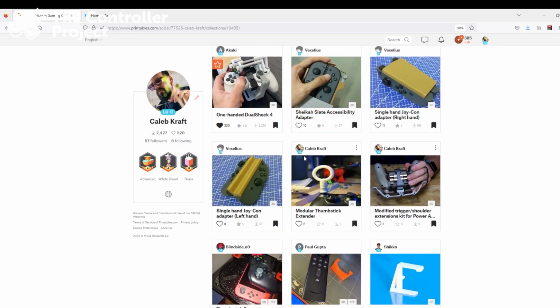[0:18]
Today we're going to be looking at 3D printed accessories for playing the Nintendo Switch with one hand. At The Controller Project, we help people with physical disabilities be able to play video games by doing 3D printed modifications to controllers.
I've got a huge library of parts, but unfortunately many of them are untested, so I'm doing this video series to test some of those parts to see if they're printable, if they work like they say, if the documentation is right, if there's any tips and tricks to putting them together, and to get the word out.
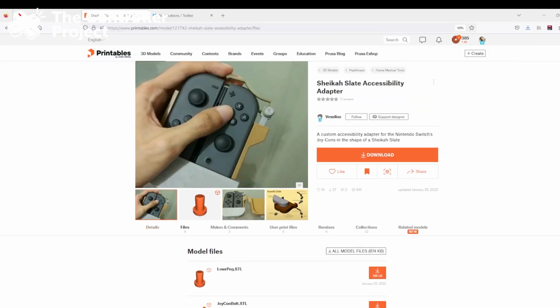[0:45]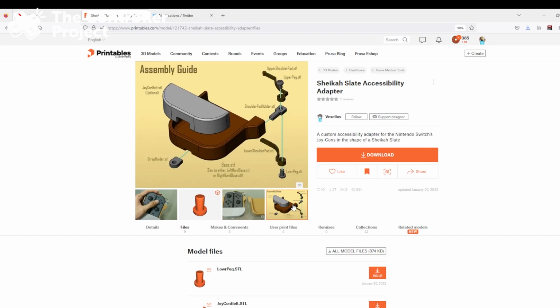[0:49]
Today we're going to be checking out the single hand gaming kits for the Nintendo Switch. It's a cool looking kit and right off the bat I've got to say, well first of all I've printed this one before, I know it works, but it looks good. It's got good documentation, there are images of it printed, so we know somebody's been able to print it. Let's get to it, let's throw it into the slicer and let's see what we think.
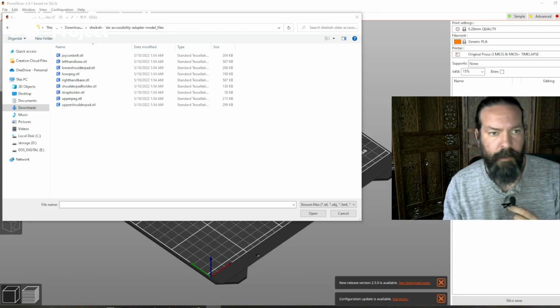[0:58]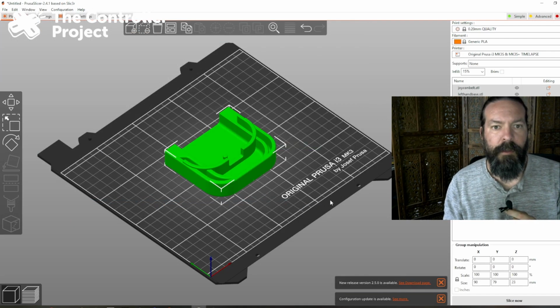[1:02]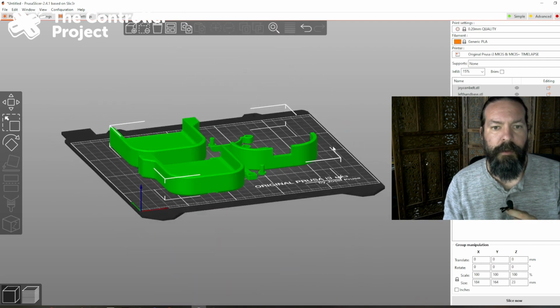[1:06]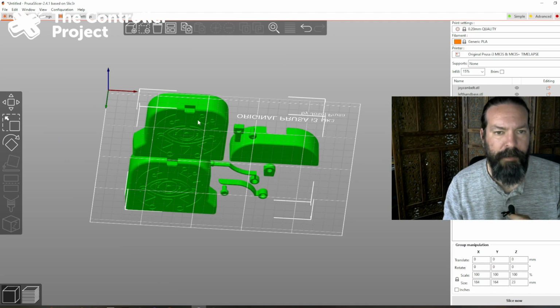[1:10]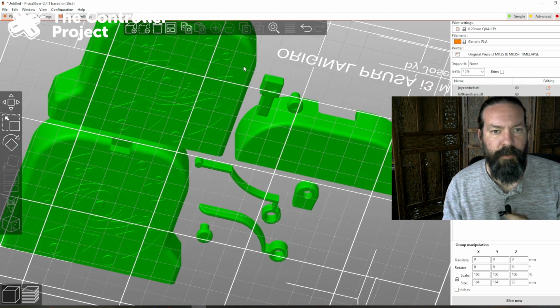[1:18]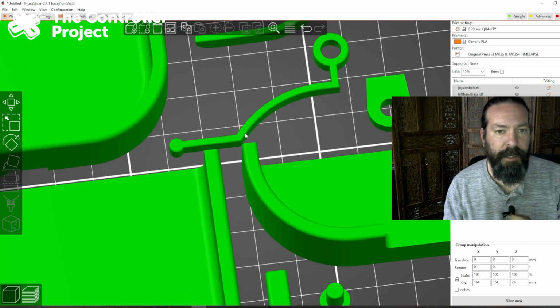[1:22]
Alright, let's pull this into Prusa's slicer, auto-arrange it. Nothing here stands out, really. Your printer might have some hard times with these little tiny bits of ornamentation here. Like if you print with a raft or something, you might lose some detail there. My printer does not have a hard time with that.
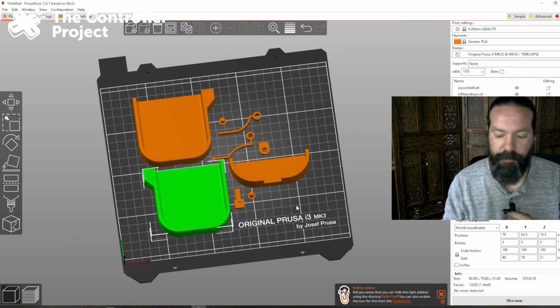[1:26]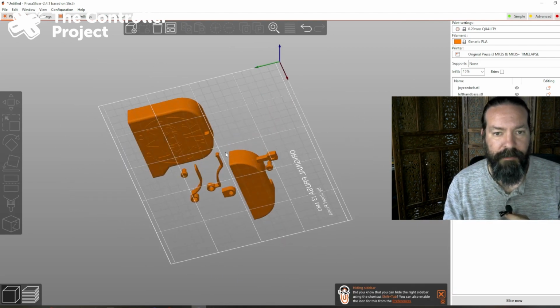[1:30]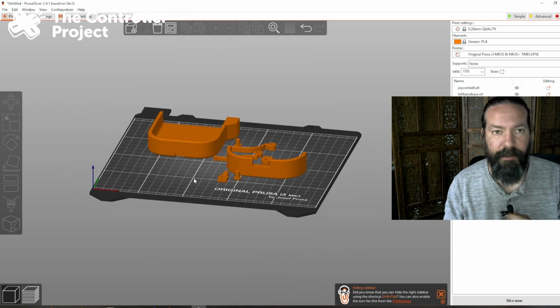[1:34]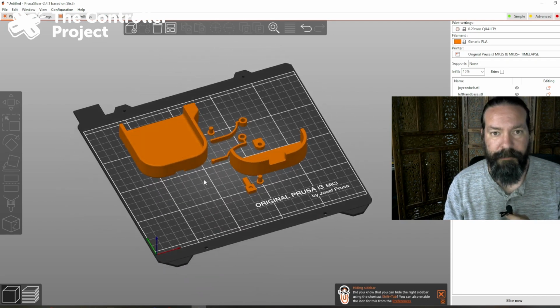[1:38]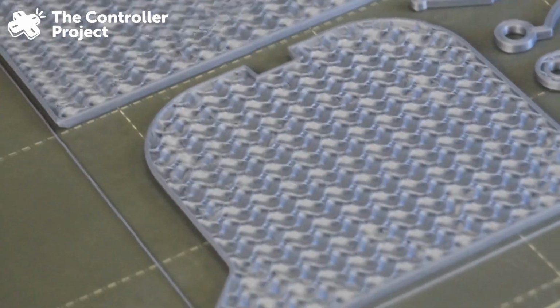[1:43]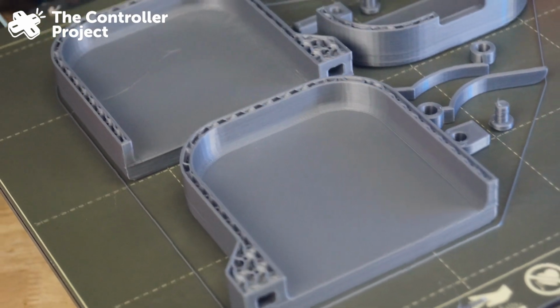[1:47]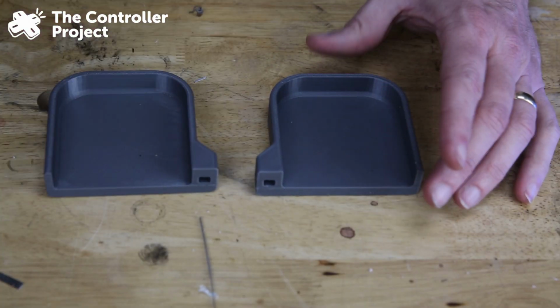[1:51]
And you only need to print whichever side you're going to use. You can delete the rest. Everything else, I mean it's already on the bed, it's already aligned properly. You can pretty much just slice this and print it. There's both the right-handed and left-handed versions.
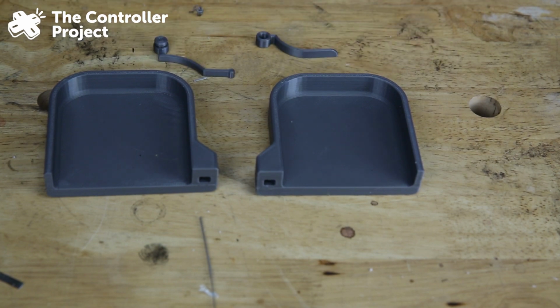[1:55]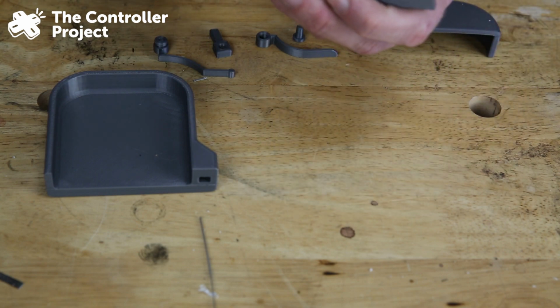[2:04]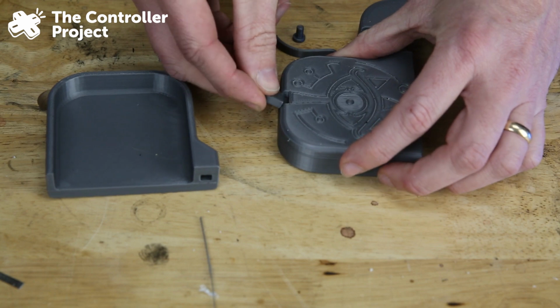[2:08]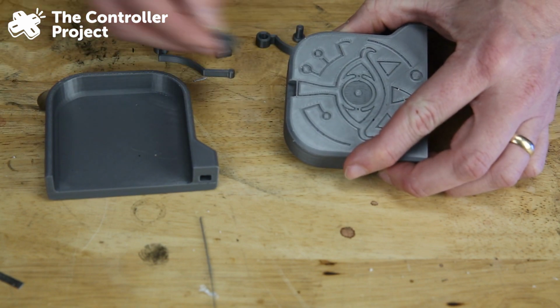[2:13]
Here are the little button pressers, this little bit, and then this cap. So this is just a lanyard holder. The lanyard holder goes in here and then you glue it in place. And so you would put that on whichever one you want. It's totally optional.
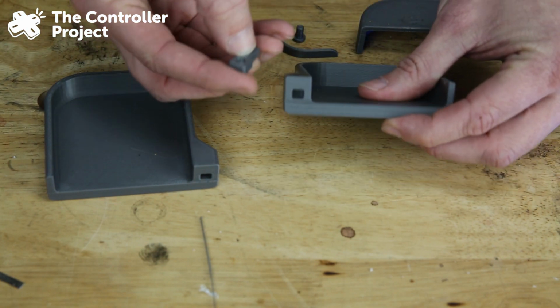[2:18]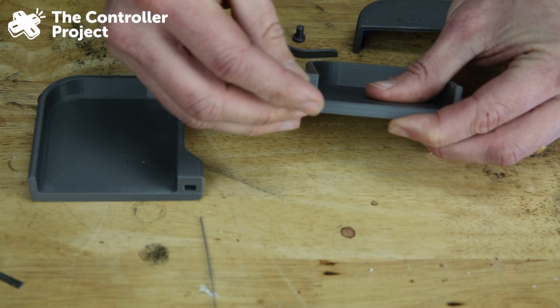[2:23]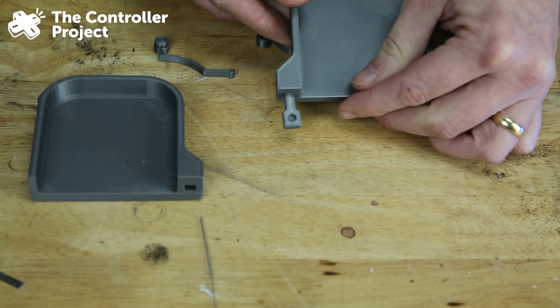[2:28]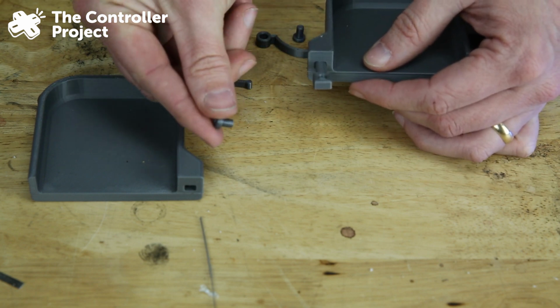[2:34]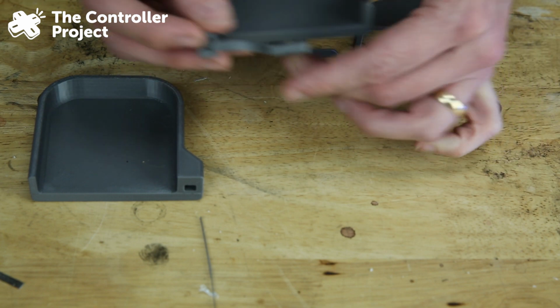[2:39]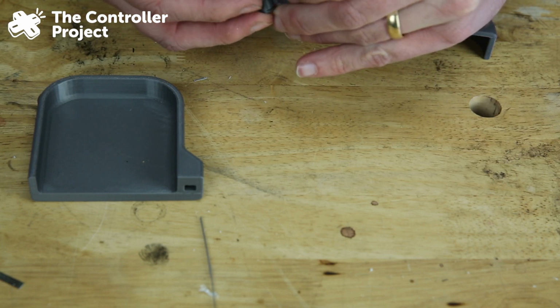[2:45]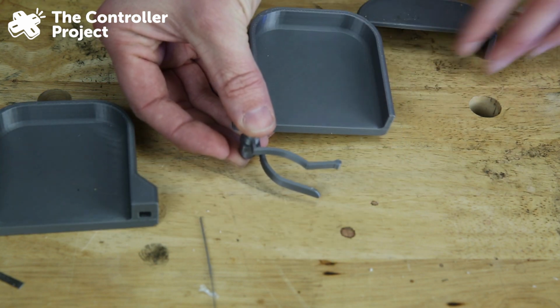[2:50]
Then the way it works is that this little piece slides in here and then it's kind of tight. I like to take a knife and scrape down the sides a bit, but you can see it goes in there. And then these little pins slide into here and you glue them in place. Like this. You place your Joy-Cons in there and then put this piece over it to hold it all in place.
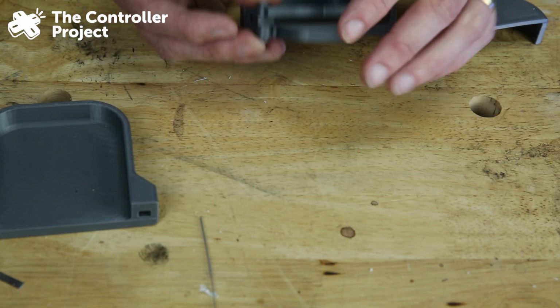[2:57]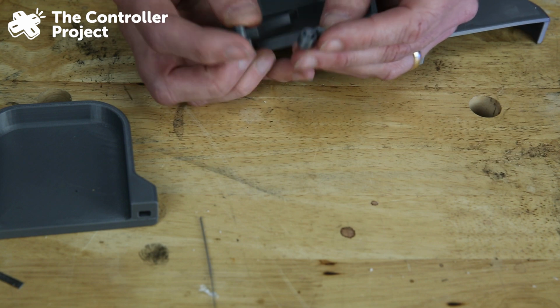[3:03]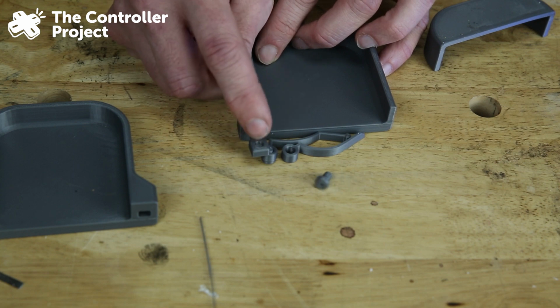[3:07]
This does work technically, however there is a weak point here. These pins, when glued in place, they're just not great. I don't like to glue them in place. So what I actually like to do is drill through this and put a little bolt through there. Let me show you how that works.
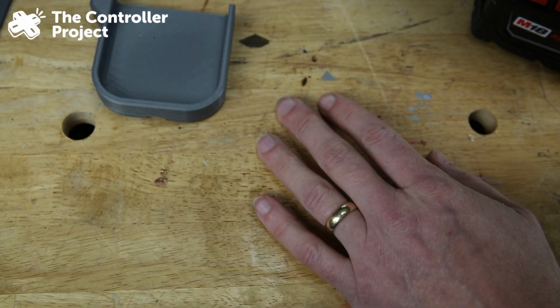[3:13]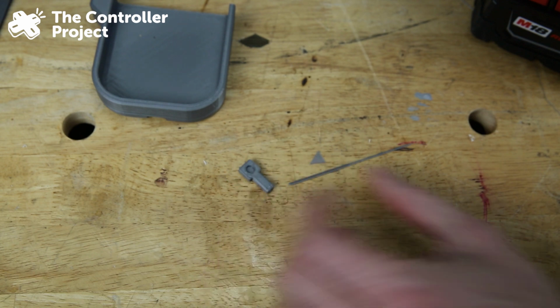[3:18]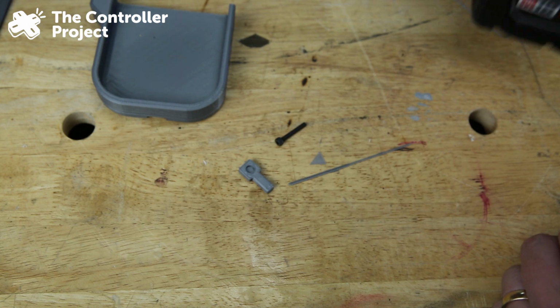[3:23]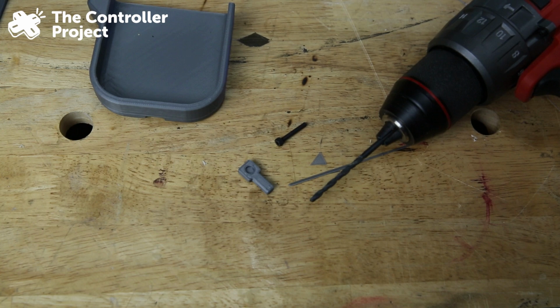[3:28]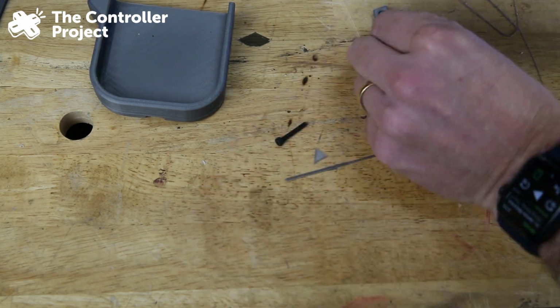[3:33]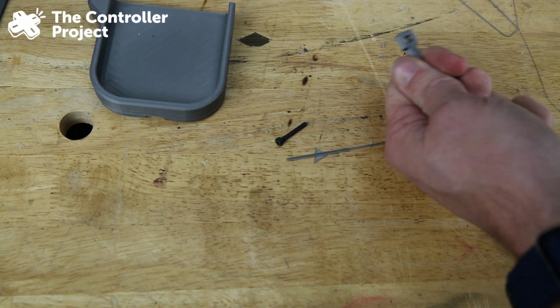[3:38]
Okay, so this is the part that we're working with here. And I'm going to use this bolt through it. So, I've got a drill bit that is the proper size for this. And we'll just drill right through it. Then once you have that through, then you can feed your bolt through. I'm going to use some washers so that it doesn't catch on things.
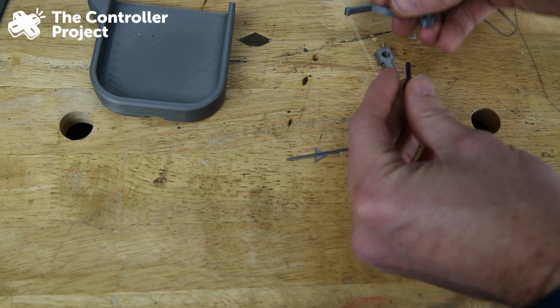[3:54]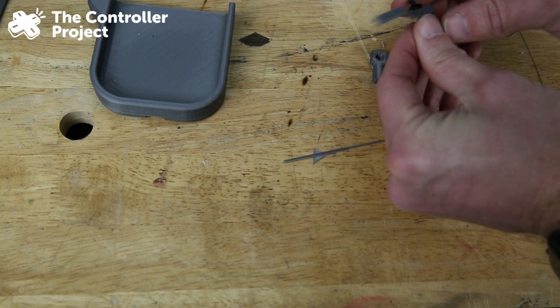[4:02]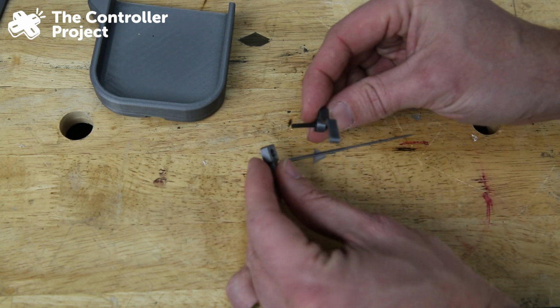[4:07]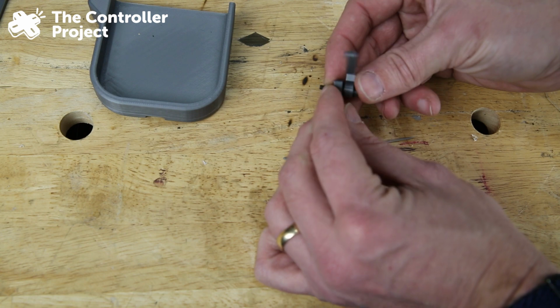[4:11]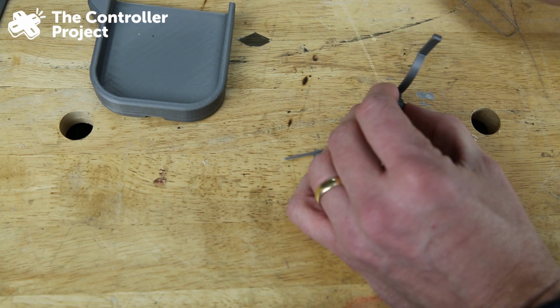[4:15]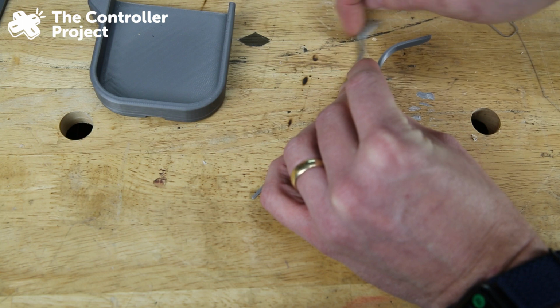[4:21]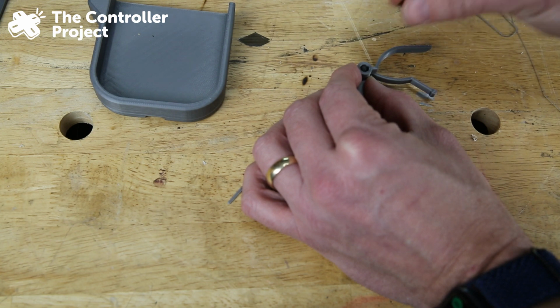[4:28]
So let's see here. This one goes on top. Stick that through there. Another washer. And then through here. And then another washer. And then this. And then the bolt, or the nut. Once you get that tightened down,
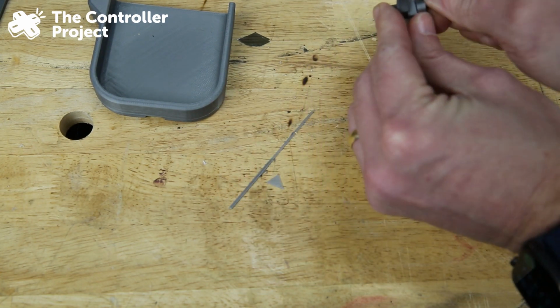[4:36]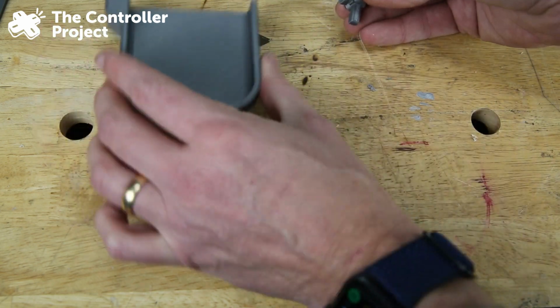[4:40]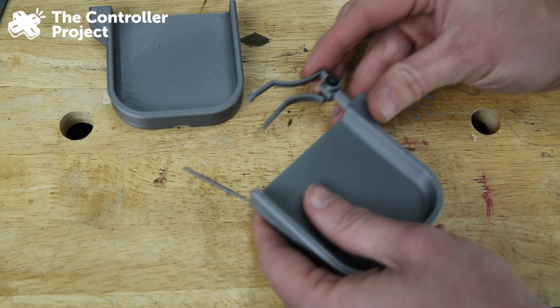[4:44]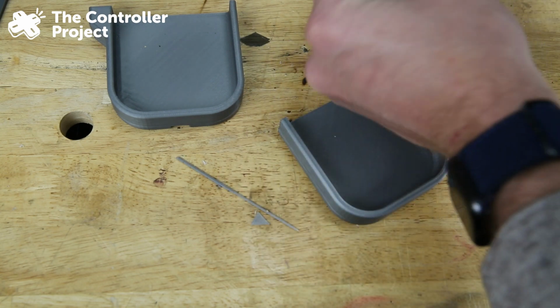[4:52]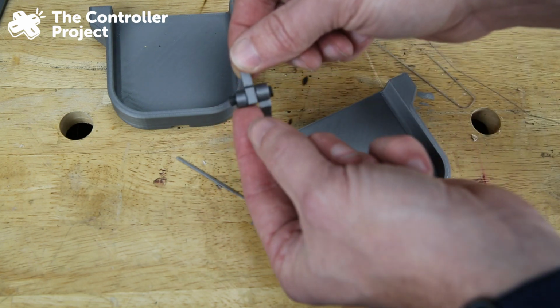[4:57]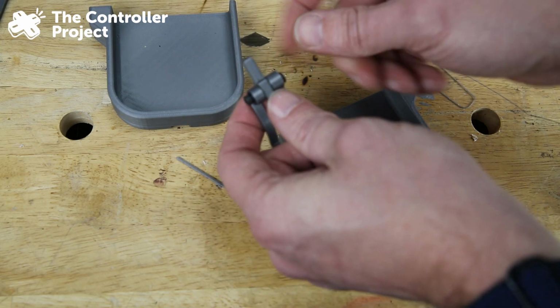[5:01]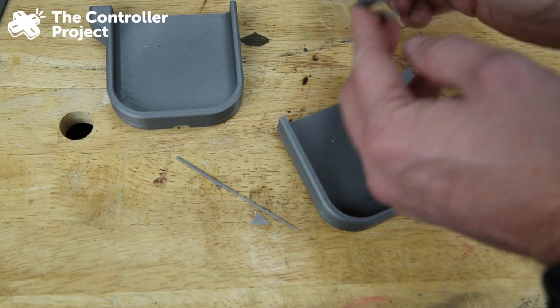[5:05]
you have this, and you can plop it in like that. And the bolt will hold much longer. It will last much, much longer and be more resilient. If you were to redesign this part to print in a single piece with protrusions from the sides, and then cap it off somehow, I think that would be a slightly more robust design.
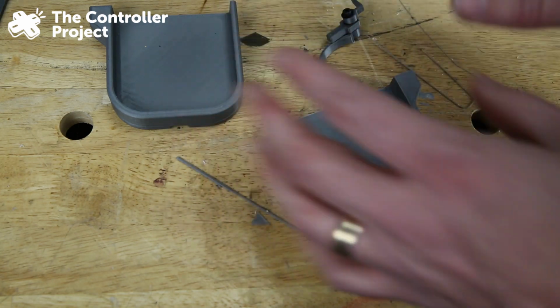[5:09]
But this modification works. Let's put it together and see what it looks like all together. So I think this actually, it looks fantastic. It feels good in my hand. You know, I can't tell you how well you would be able to game with it, but I think it's a really elegant solution. As a bonus, this creator also makes an even simpler solution for one-handed gaming on the Switch. And that's this set.
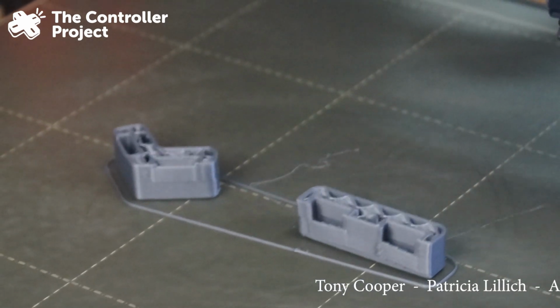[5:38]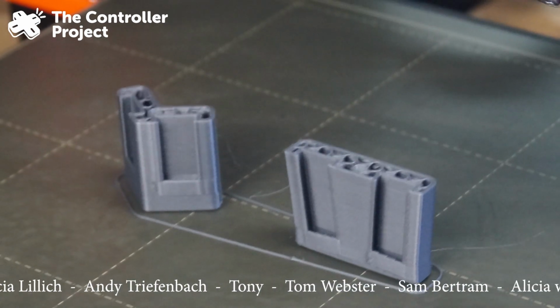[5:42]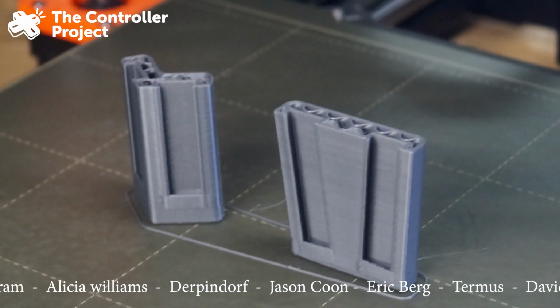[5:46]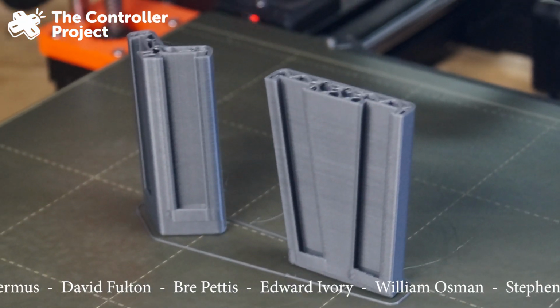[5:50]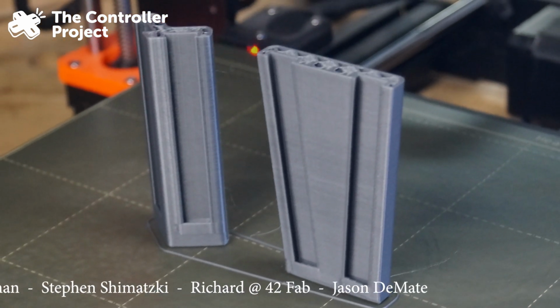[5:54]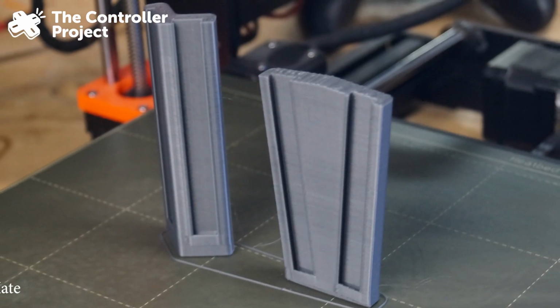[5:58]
These are just a simple piece of plastic that you can attach the controllers in, in various ways. So you can attach them like that, facing away from each other and hold it like this. Sometimes simple is best. I think this is fantastic.
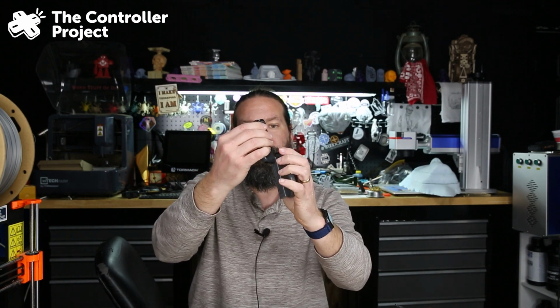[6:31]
And then this one is at an angle. So you can do, you know, facing towards each other or facing away from each other again. And they just slide in like this. And so you can hold it with one hand. Really fantastic stuff, in my opinion. I think you did a great job.